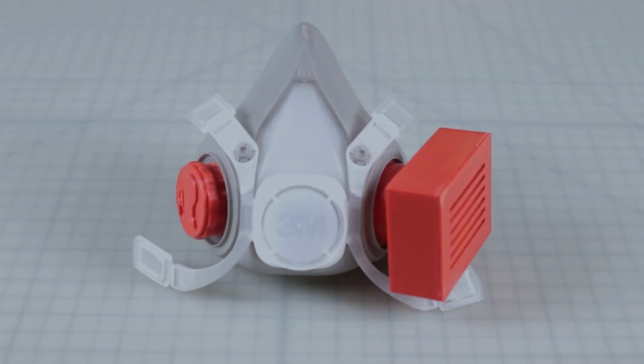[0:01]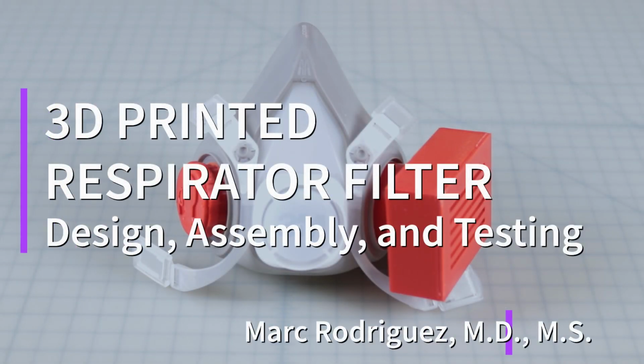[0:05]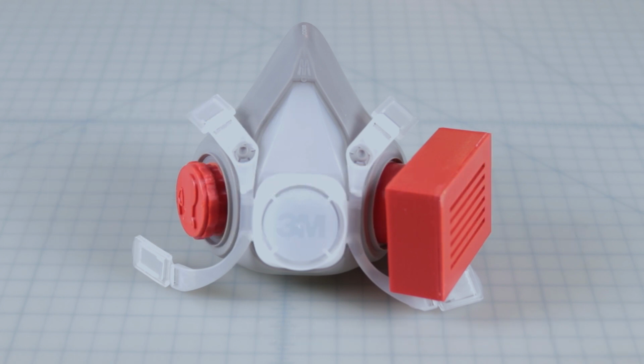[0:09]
Here, we'll show a design to utilize a small HEPA filter in a 3D printed adapter cassette with a reusable and commercially available mask. With the filter, 3D filament, and other components, the final cassette cost comes to approximately $3 each.
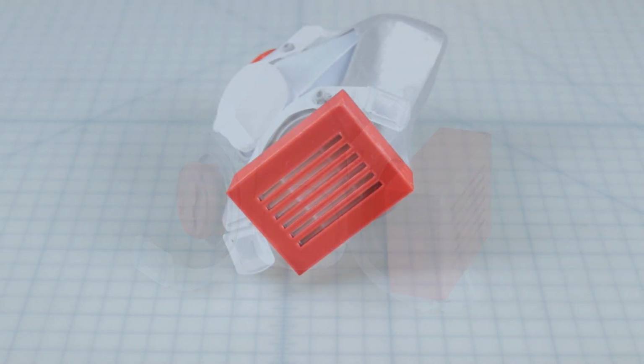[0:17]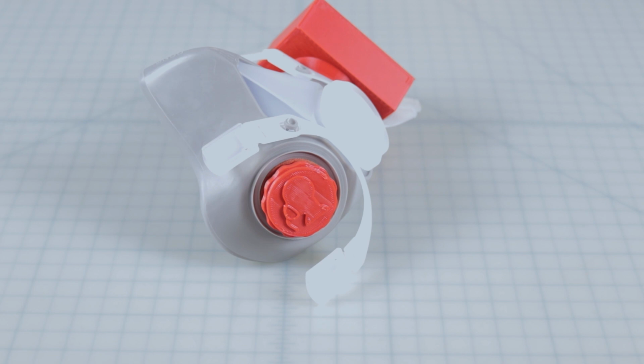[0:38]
The dwindling supply of N95 masks has led some healthcare providers to search for creative solutions for personal respiratory protection. One emerging idea is to purchase a reusable commercial respirator. However, the cost and availability of replacement filters makes use of these masks impractical. Small HEPA filters are inexpensive, in high availability, and have a filter efficiency comparable to N95 masks.
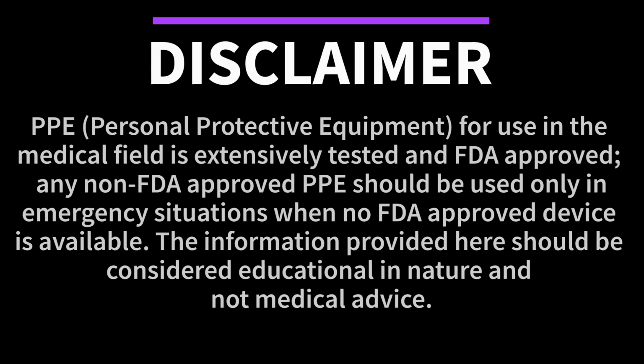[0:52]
PPE for use in the medical field is extensively tested and FDA approved. Any non-FDA approved PPE should be used only in emergency situations when no FDA approved device is available. The information provided here should be considered educational in nature and not medical advice.
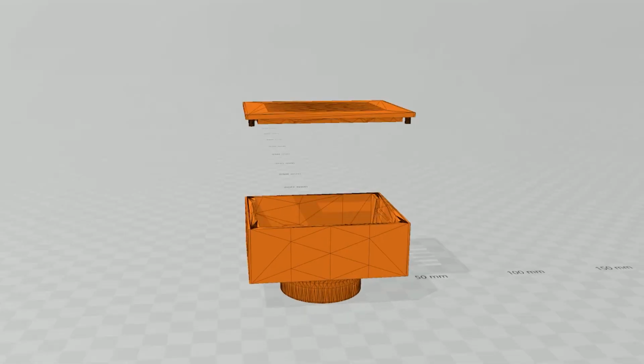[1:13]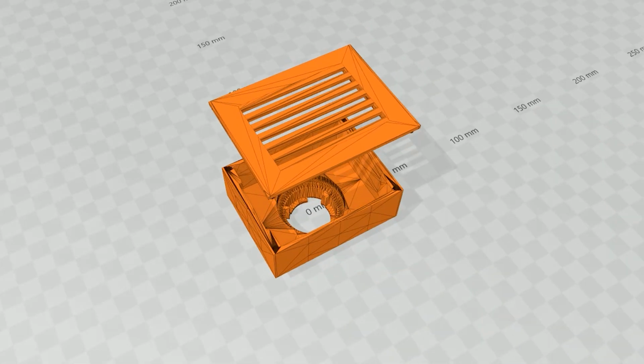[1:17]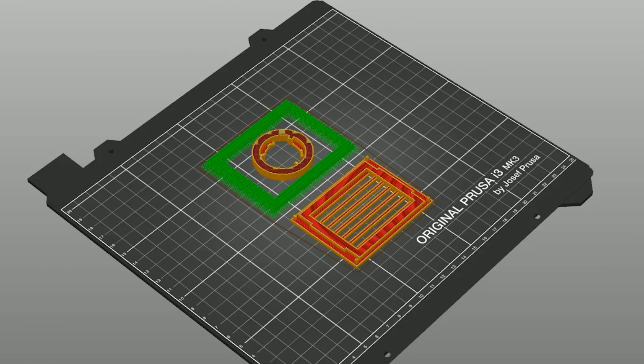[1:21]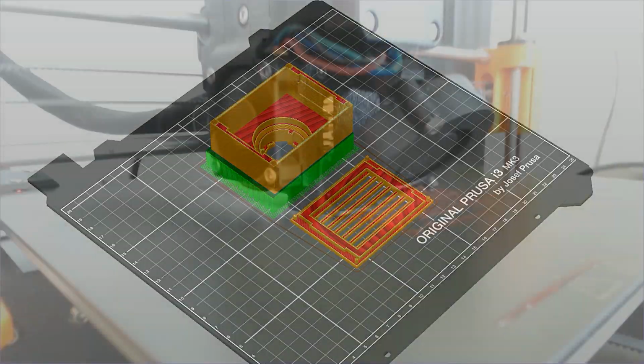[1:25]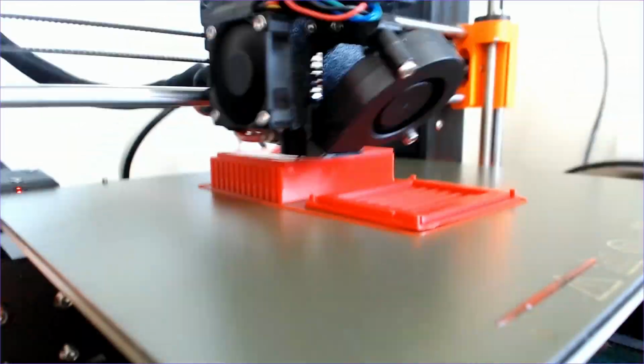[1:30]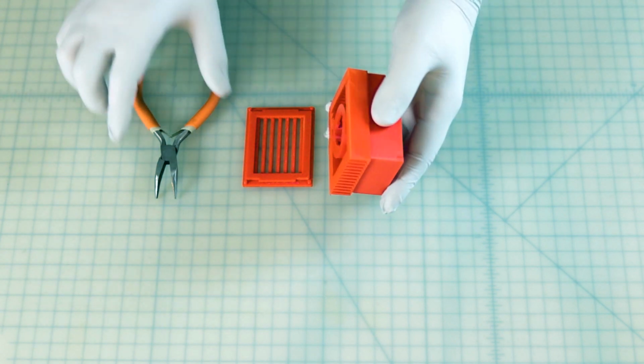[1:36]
Here is a mock-up of our model in a CAD program. Now we'll place it in our slicer software and add some supports for 3D printing. And then we'll transfer it over to the printer. Now that we have a completed print, we'll proceed with assembly.
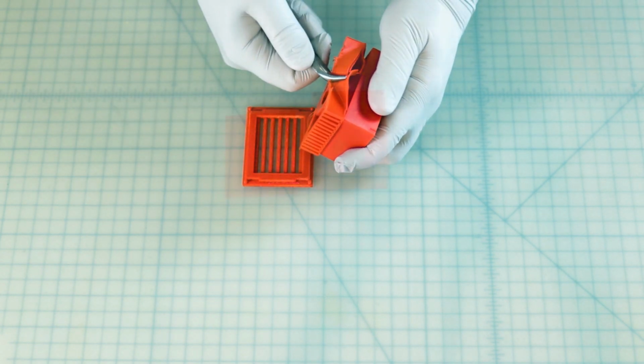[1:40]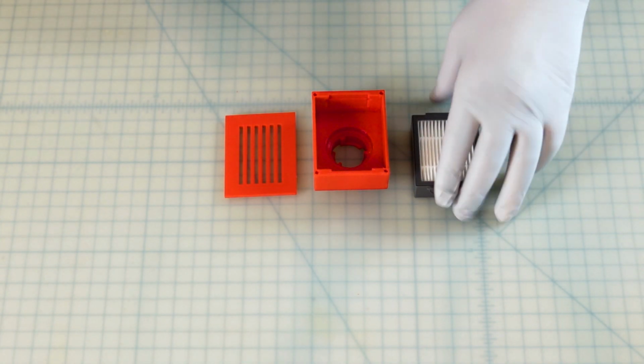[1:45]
First, we'll remove the supports from the print. The cassette is designed to lock the filter tightly in place. The gasket on the rear of the filter will form a tight seal when pushed into place with the cover component.
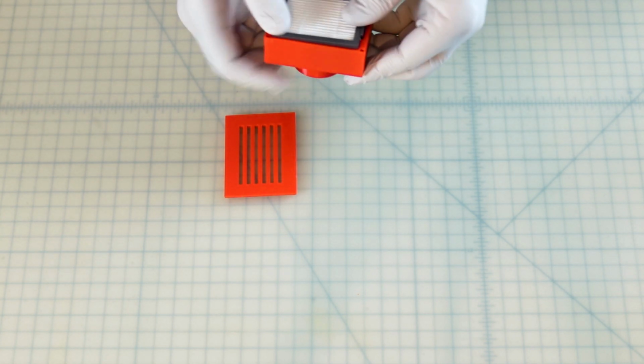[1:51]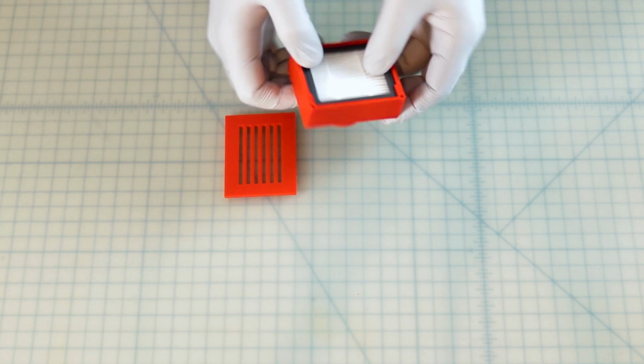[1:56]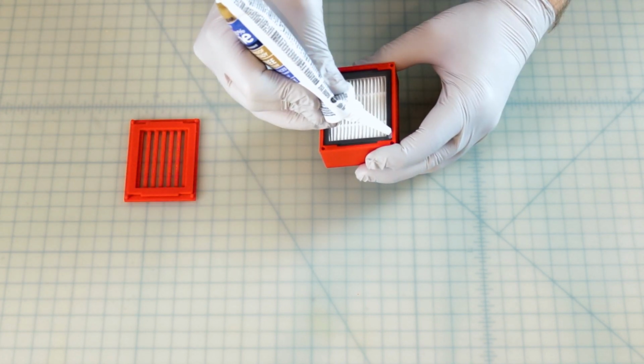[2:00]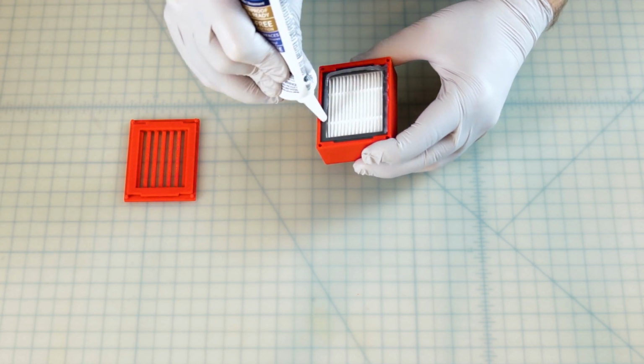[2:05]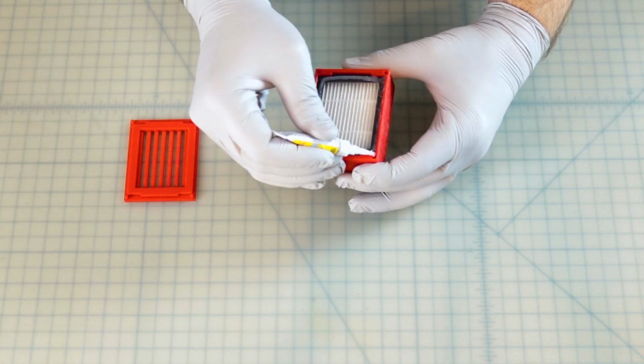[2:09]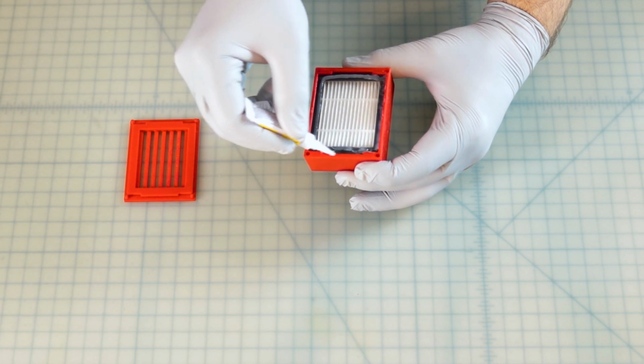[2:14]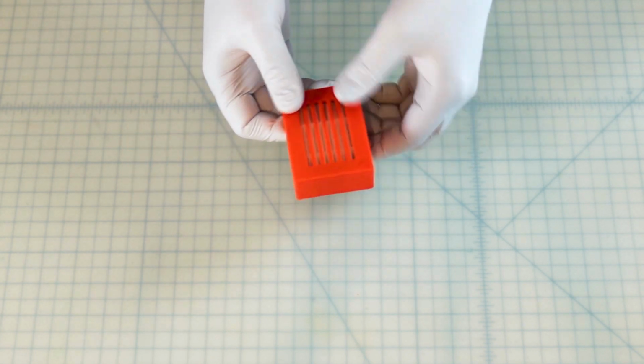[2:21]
Because additive 3D printed parts are not as smooth as injected molded parts, we will be adding a layer of silicone sealant to supplement the seal produced by the lower gasket and ensure a strong seal. Next, we'll add non-toxic fast-drying adhesive to hold the cassette tightly together. Now we clamp and allow time to dry.
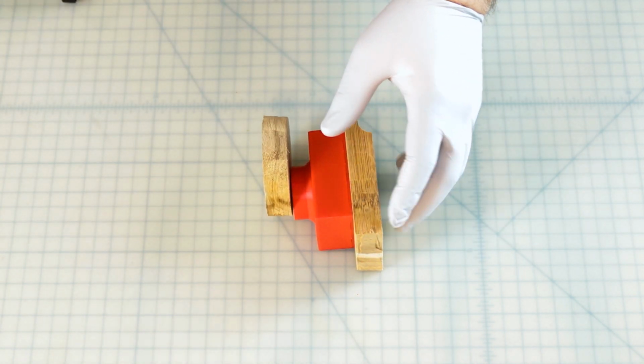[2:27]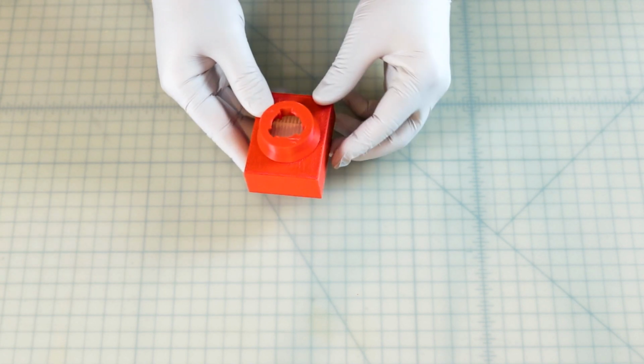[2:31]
Now that we have a completed product, we'll do some basic testing to ensure that we're not fooling ourselves with the effectiveness of this design. First, we'll do a limited leak test with stannic chloride to test for any gross leak. The mask passes without any major issue.
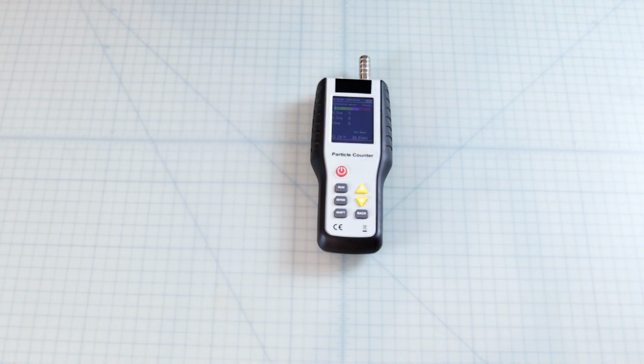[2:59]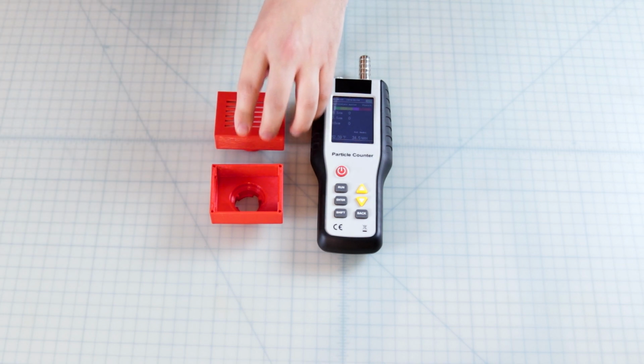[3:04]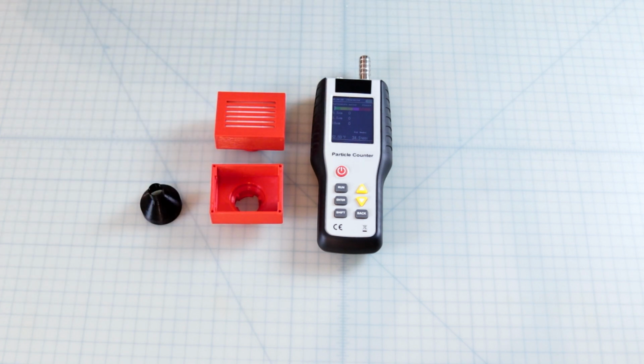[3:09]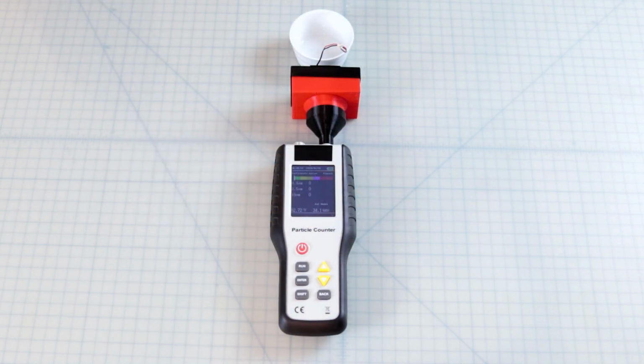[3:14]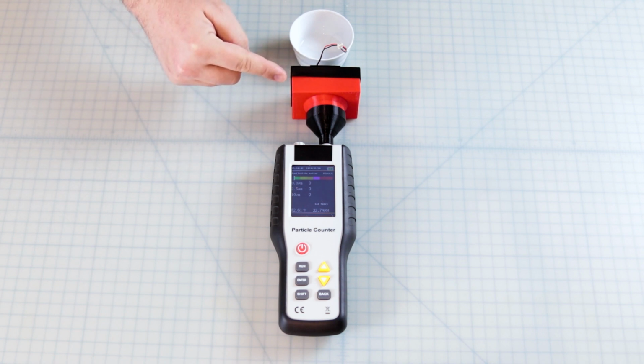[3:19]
Second, we'll attempt a more quantitative test with particle size analysis. For this test, I'll use a particle counter capable of detecting 0.3 micron particles, an empty filter cassette, a completed filter cassette, and two 3D printed testing parts. Here's the testing setup: particle counter, an adapter, the filter cassette, a fan to push air into the filter, and a small container to spray an aerosol.
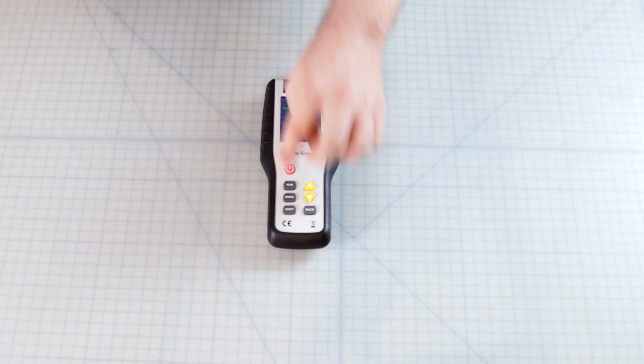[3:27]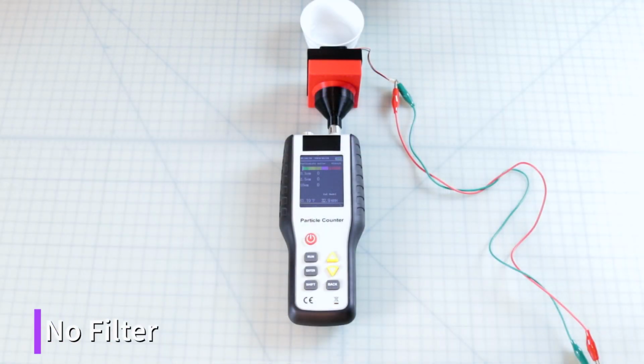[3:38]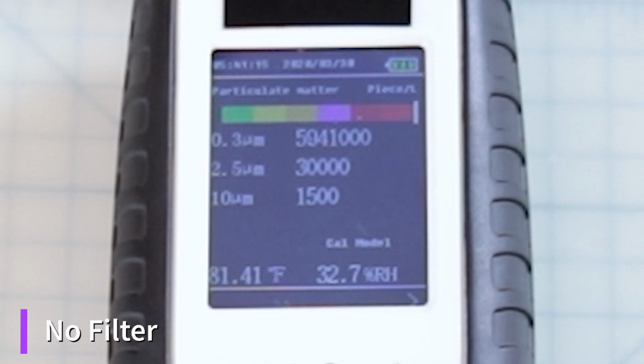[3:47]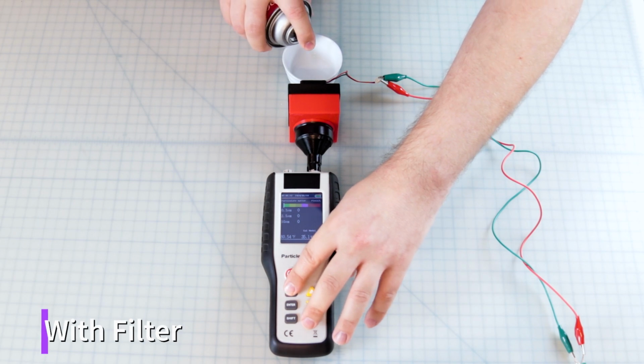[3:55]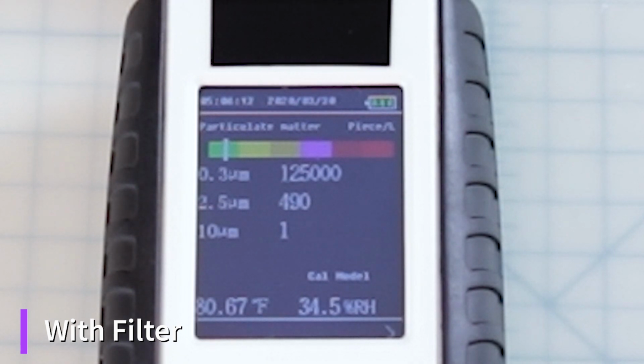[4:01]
We'll start with the baseline reading. As you can see, the testing environment has a baseline of 3100 0.3 micron size particles per liter. For the first test, we'll spray an aerosol and test for passage of particles through the empty cassette. The result is a spike of 0.3 micron size particles to 5.9 million per liter. Next, we'll perform an analysis with the completed filter cassette. The result is a spike of 0.3 micron sized particles to 125,000 per liter.
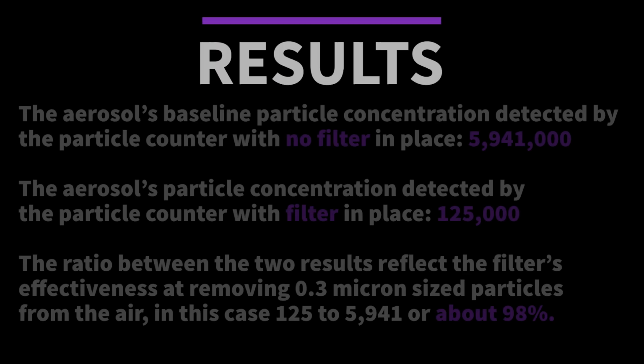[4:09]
From these results, we can see that the aerosol's baseline particle concentration detected by the particle counter with no filter in place was 5.9 million. The aerosol's particle concentration detected by the particle counter with the filter in place was 125,000. The ratio between the two results reflects the filter's effectiveness at removing 0.3 micron-sized particles from the air. That number in this case comes to about 98%.
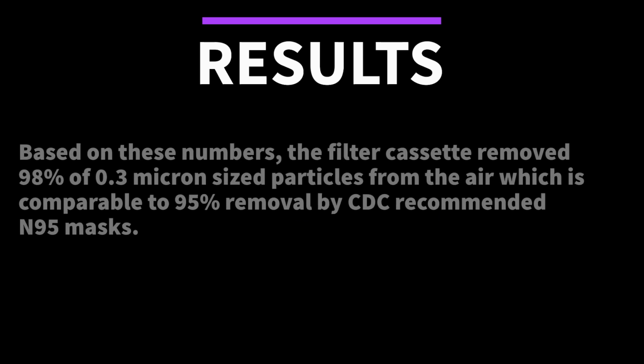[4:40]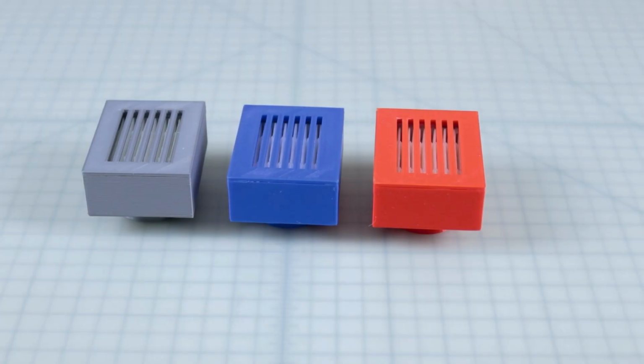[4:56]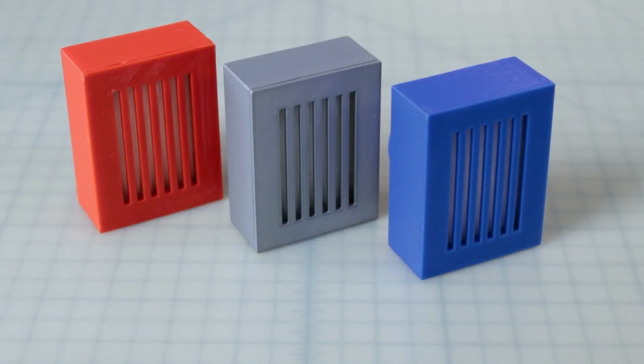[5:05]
Based on these numbers, the filter cassette removed 98% of 0.3 micron-sized particles from the air, which is comparable to 95% removal by CDC recommended N95 masks. So within the confines of this test, the difference in particles between an empty filter cassette and a finished product is 98%. Although I will still rely on FDA-approved PPE, this data, at the very least, shows that as an emergency backup, this filter could have some usefulness.
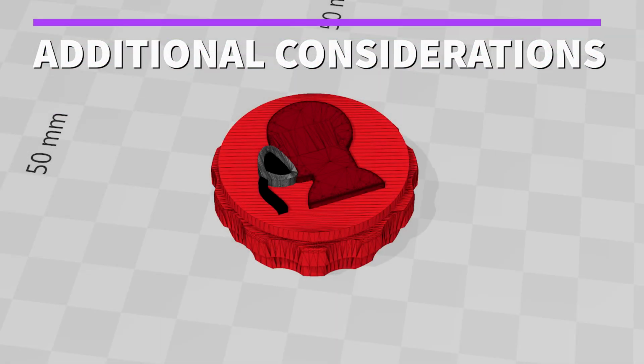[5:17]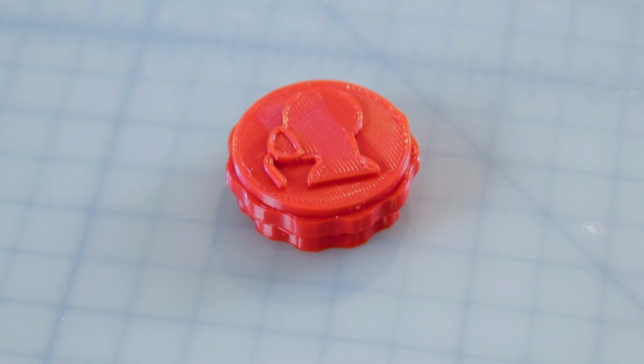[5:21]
In order to reduce the number of required filters, we designed and 3D printed a cap to cover one side of the mask so that only one inlet is used at a time.
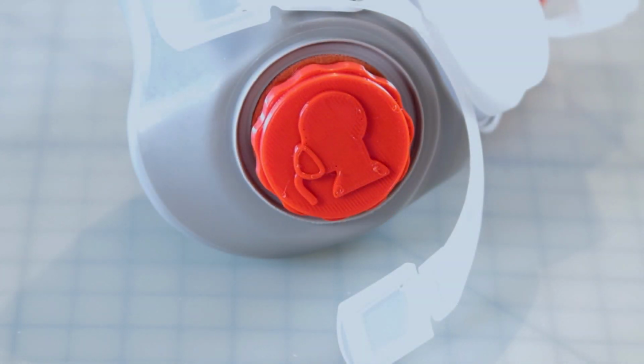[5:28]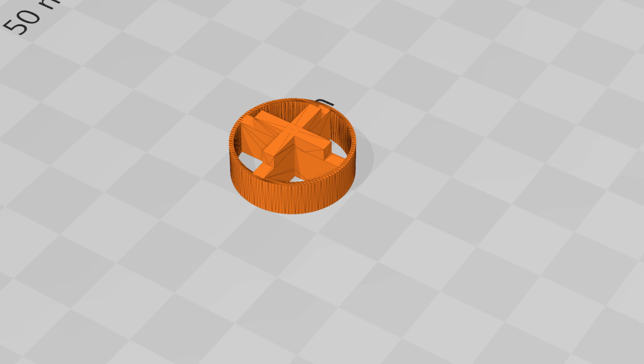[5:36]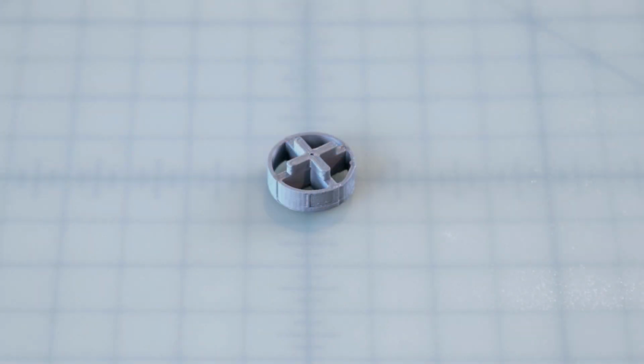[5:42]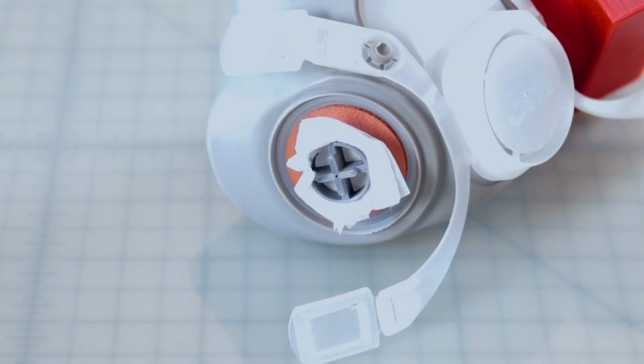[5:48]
Finally, we addressed a common concern surrounding the safety of 3D printed plastics themselves. Although the polymers used in 3D printing are non-toxic, it is unknown at this time if the 3D manufacturing process itself poses a threat to health. To add an additional barrier between the plastic cassette and user, we designed a small insert that will wedge a piece of surgical mask material into the breathing inlet, reducing the risk of theoretical microplastic inhalation.
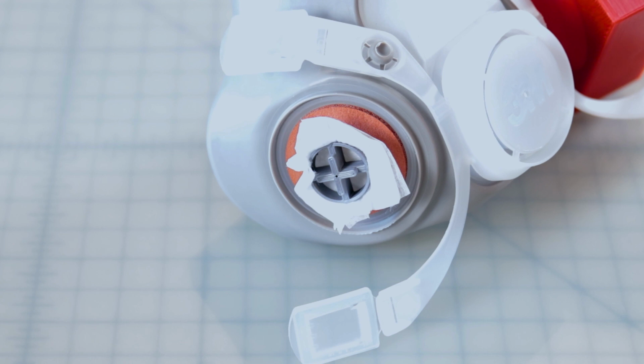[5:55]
With this piece in place, it will be necessary for most users to return to using two filter cassettes, as the work of breathing through one cassette is higher with the extra filter material.